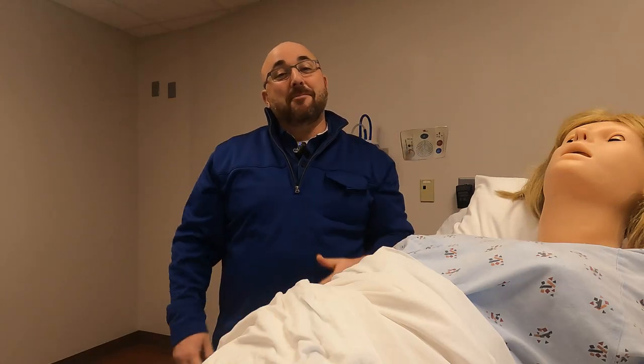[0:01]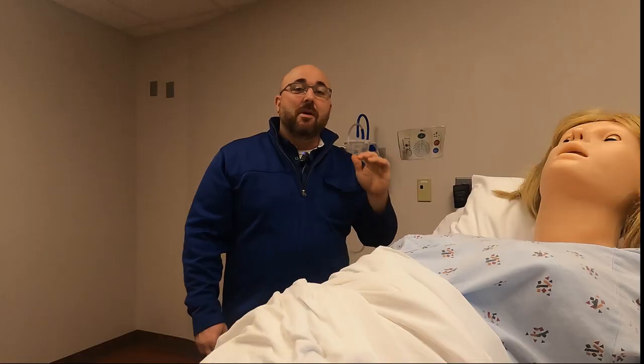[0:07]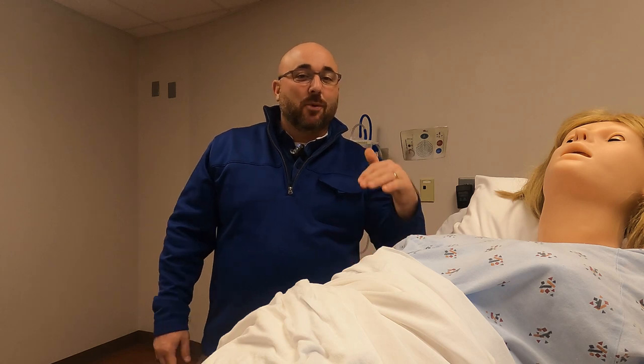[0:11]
Today's video is going to be about one of these things. You may have seen them on the wall before and not know how they're used, but today we're going to go over it RT Clinic style. Are you ready?
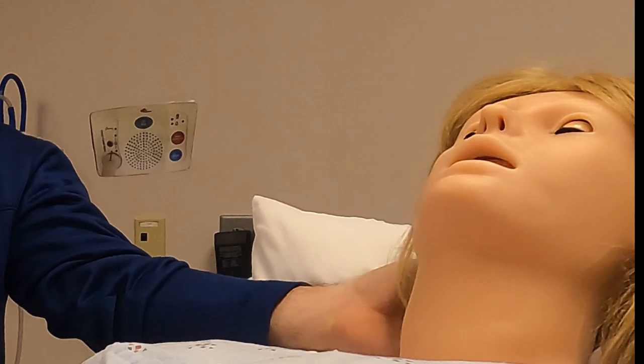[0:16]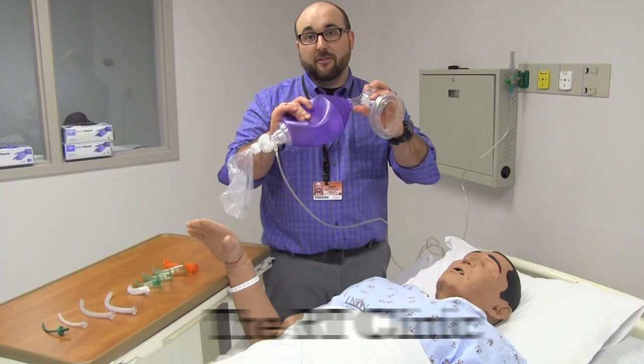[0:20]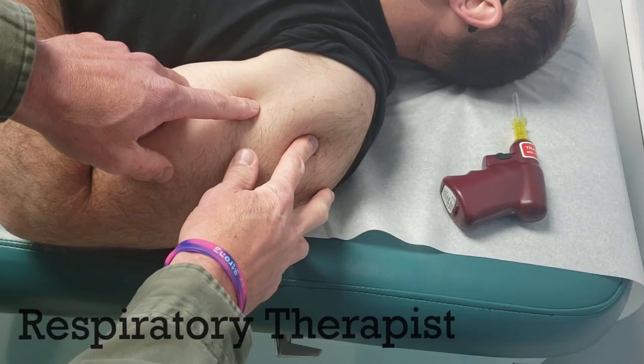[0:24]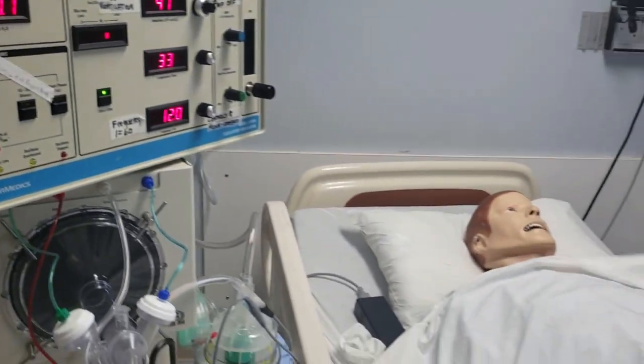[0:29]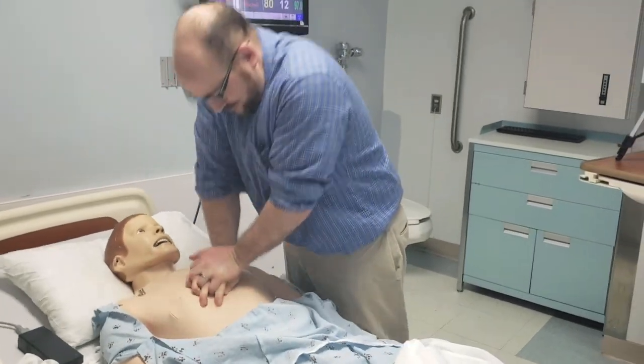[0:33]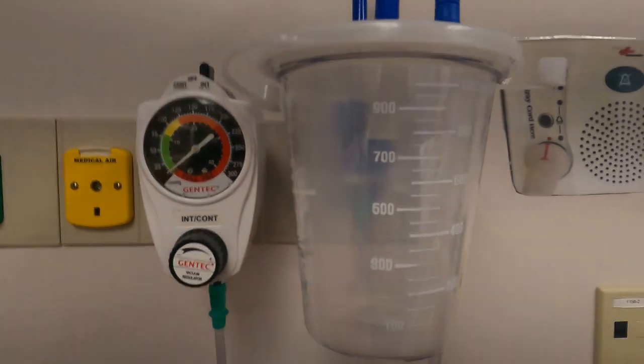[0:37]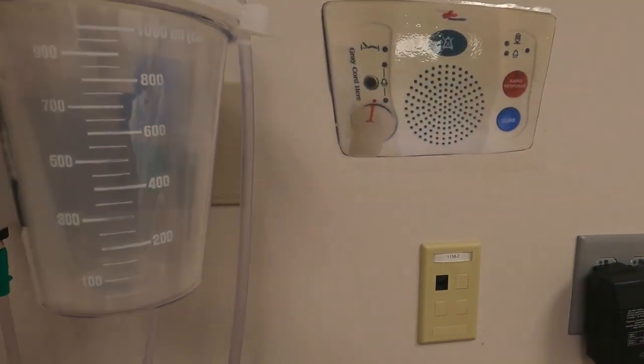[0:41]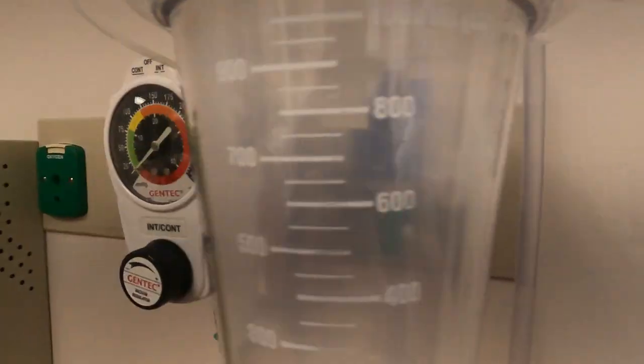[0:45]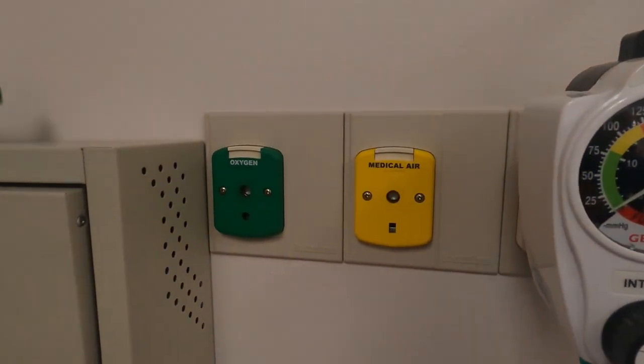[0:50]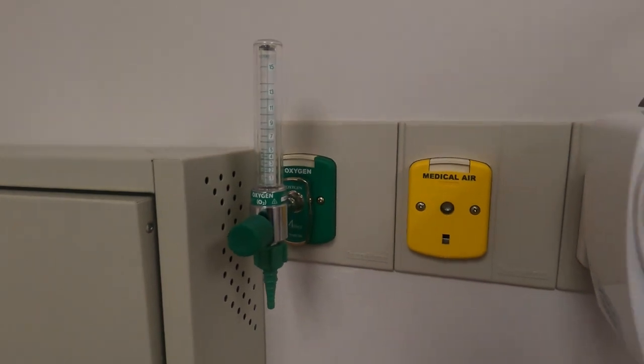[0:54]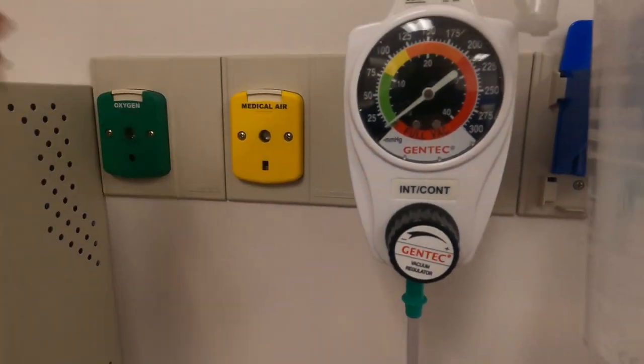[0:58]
So this is what we're looking at today. We have a suction regulator right here. We have a suction canister and we have some hoses going in and out, and you can see all these different things here. Now this can be quite confusing because right here, that's the oxygen outlet. As you see, that goes in there. We talk about that in another video. There's air.
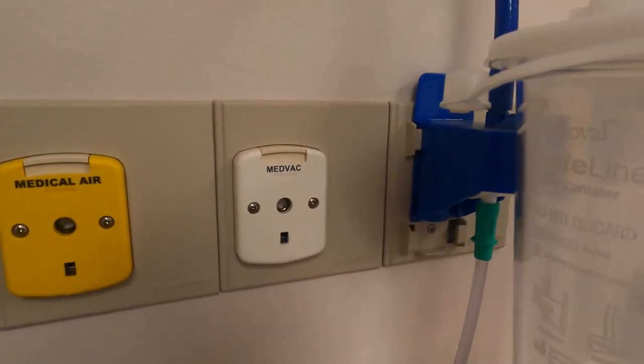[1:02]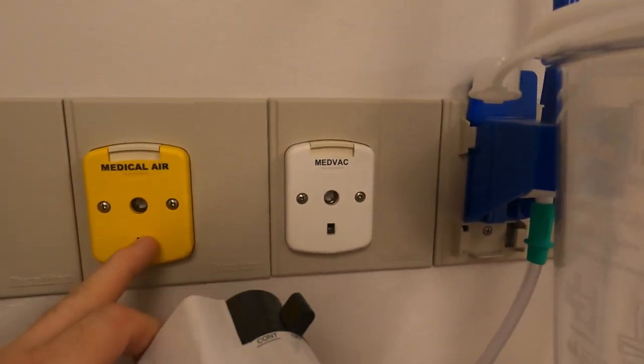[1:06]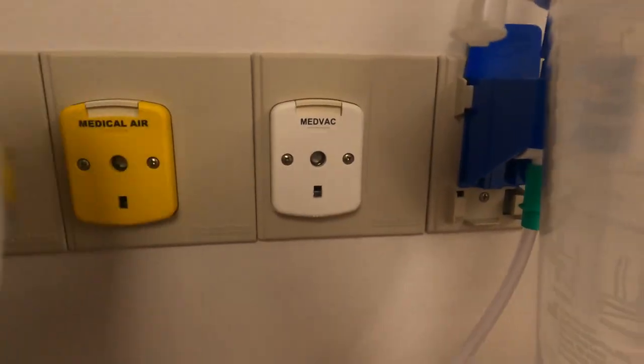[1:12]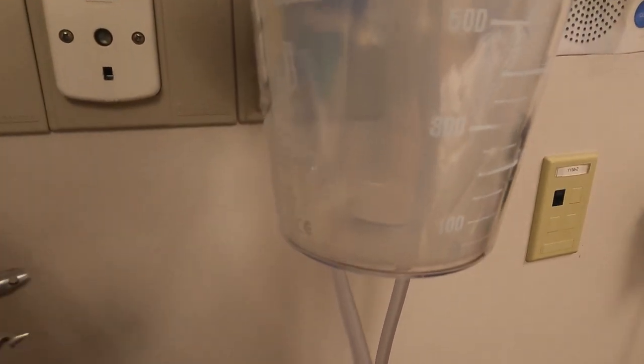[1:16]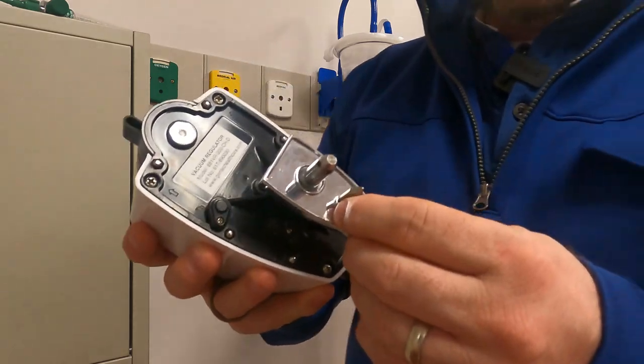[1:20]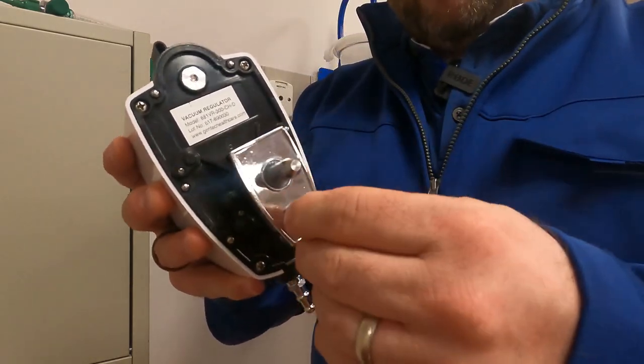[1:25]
And then behind this one, we have medvac or vacuum. So it looks like it goes in real similar to these, but these devices won't go into the wrong hole, which is really nice. So medvac, that's where this is going to go. Let's look at the back of this. So this is the regulator attachment. You're going to see this area right here. This is where the vacuum is going to pull from.
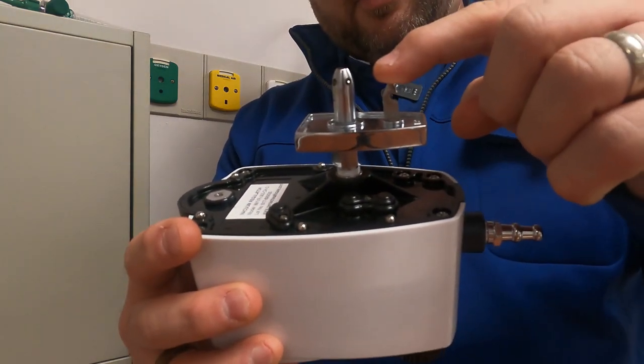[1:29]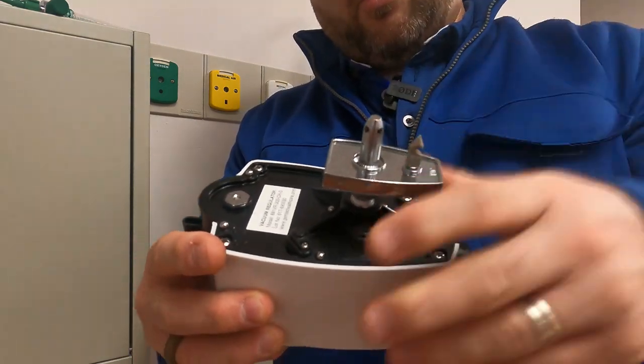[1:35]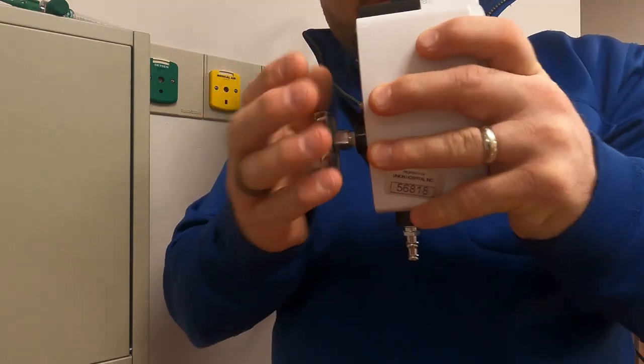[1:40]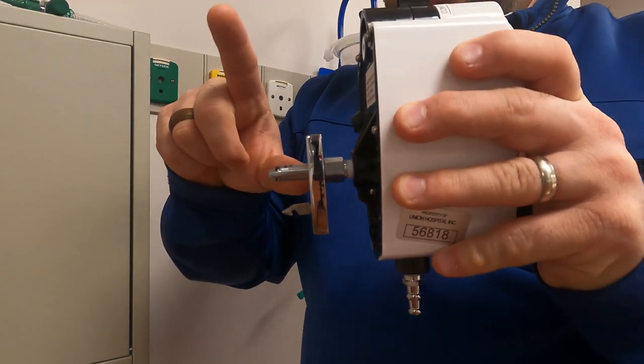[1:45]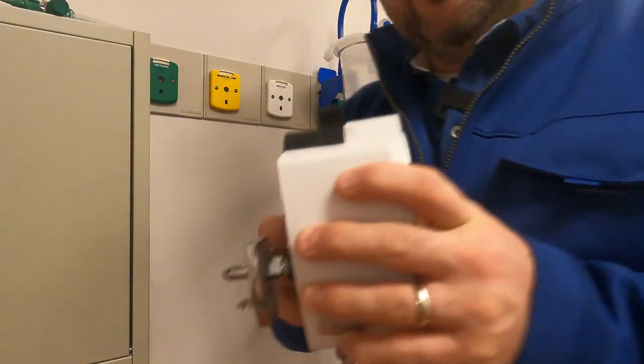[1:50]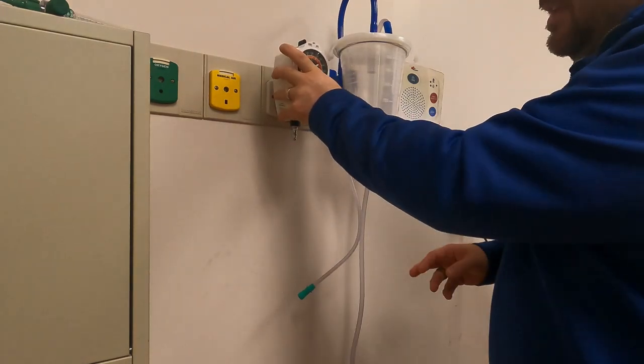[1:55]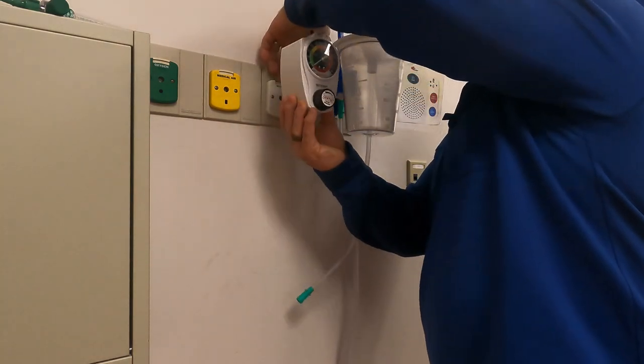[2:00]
And then this piece right here, and you can see in this case, it's a little bit loose. That's a common problem that we find a lot, but that's actually what's gonna latch it into the wall so that it won't come out. So this is gonna go in similar to a flow meter, and it's gonna lock in place. And then there will be a switch above it, a button that you'll push, and it will unlatch off of this and allow it to come out. So it's not gonna push it out with the power of a flow meter, but it's in, as you can see, a little bit loose. And then this button on the top and the back allows you to remove it from the wall.
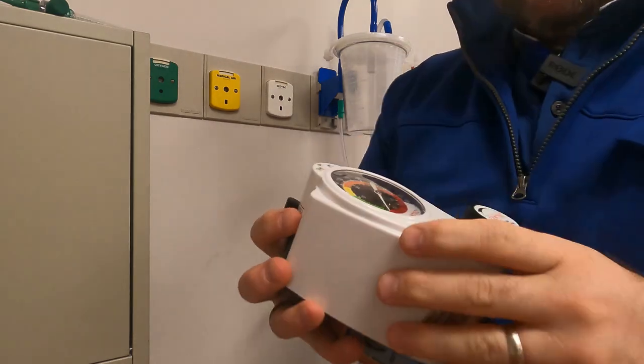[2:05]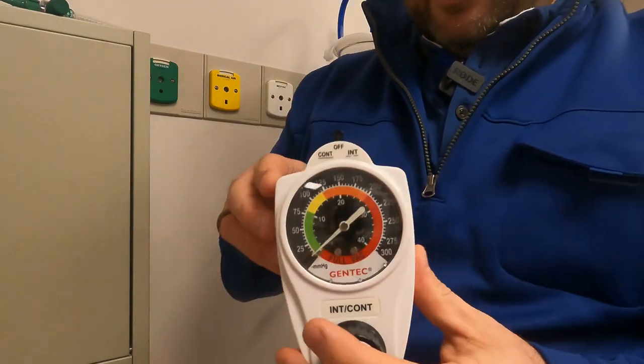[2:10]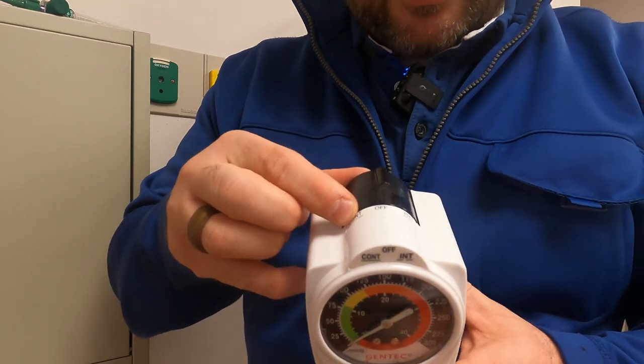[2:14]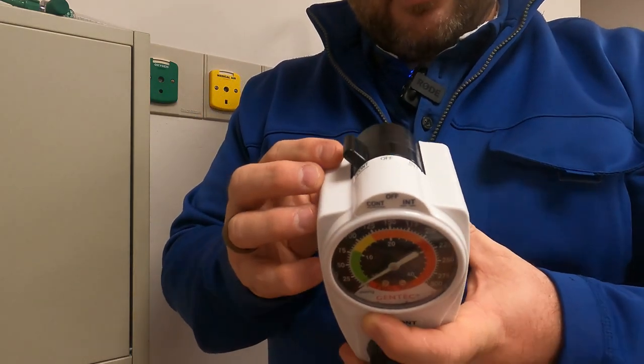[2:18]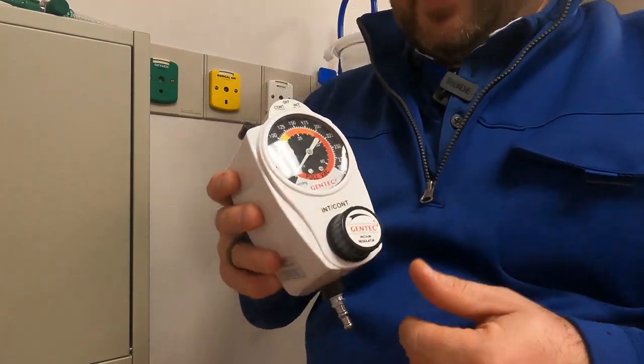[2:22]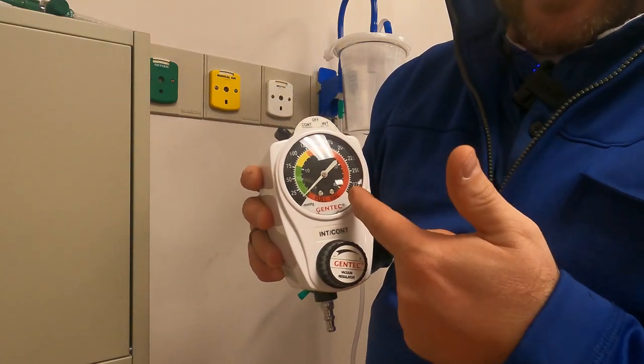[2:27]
And so this is a standard, sometimes people will call it a GOMCO. It can be changed in many different ways. We see we have continuous, off, and intermittent on the top. Usually in most cases, if you're going to need this in a pinch, you're going to want it just on continuous, and that's how we're going to test it. And then this is going to show you the pressure. So generically it shows you green, yellow, and red, but some things you need to know.
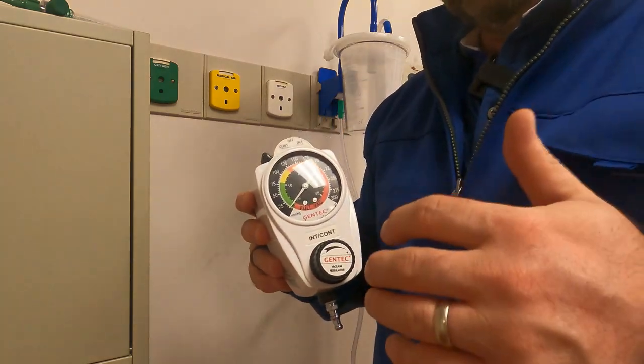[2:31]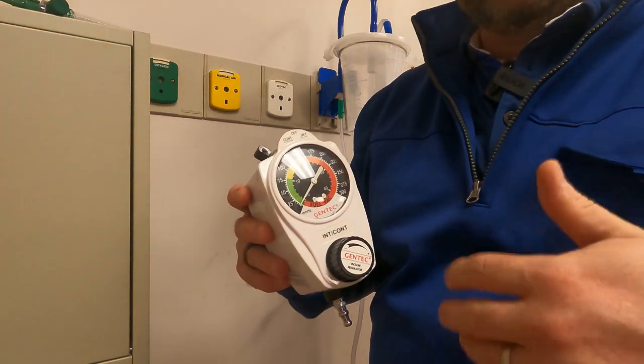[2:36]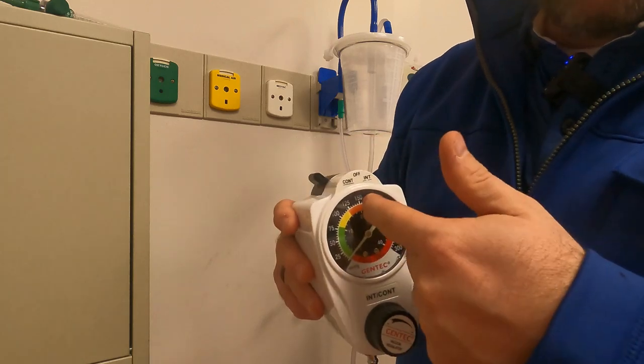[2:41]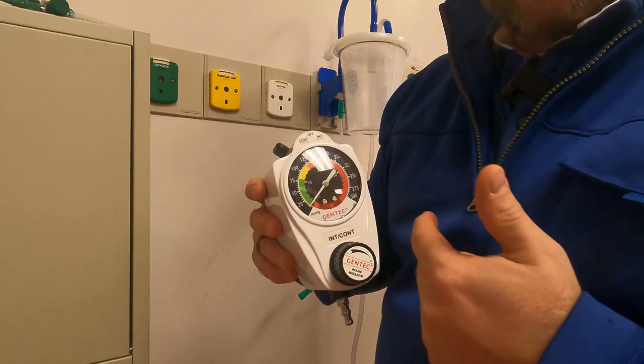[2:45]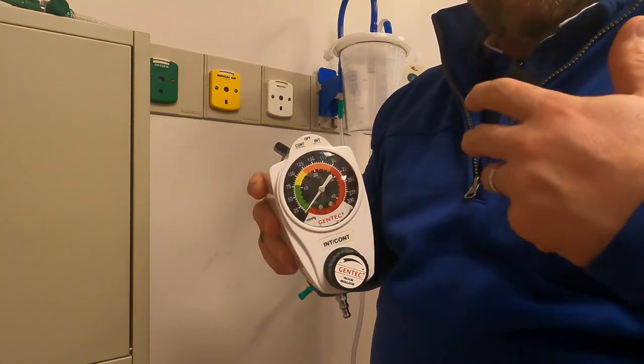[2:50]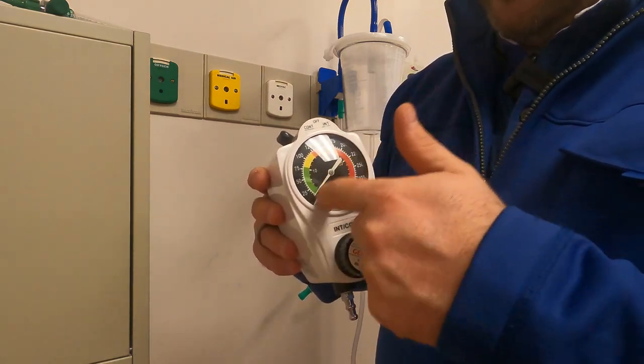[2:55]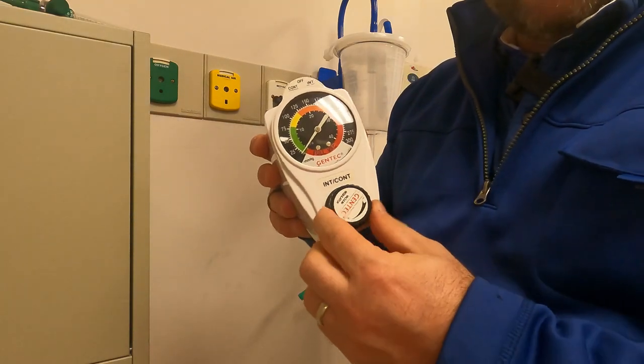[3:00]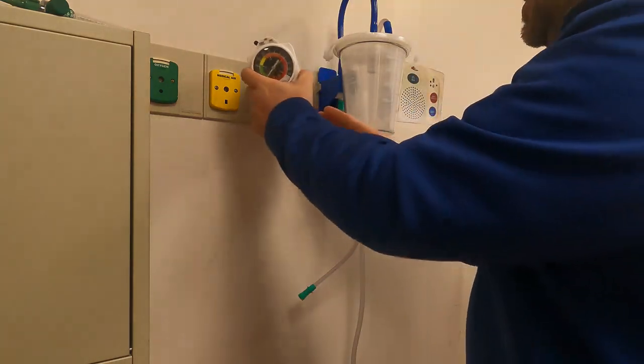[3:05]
If we're in a situation where we have to suction for like an intubation or somebody's vomiting or something like that, we really want to turn this up pretty high. Everything you read says you want to keep it below 150. Actually, 150 to 200 is kind of the max, but there are definitely times we'll turn this on full vac for a patient that might be vomiting or have a lot of mucus, or we need to suction out the airway so that we can intubate the patient. So you'll see it turned up to full vac in those cases. Now you see, if I change this, it does absolutely nothing right now because it's not plugged into the wall. So I'll plug it into the wall and then show you how to test the regulator.
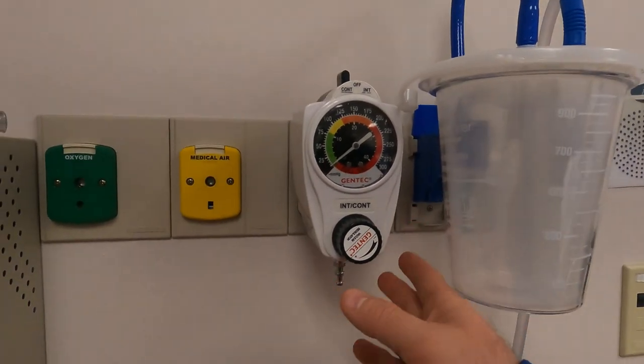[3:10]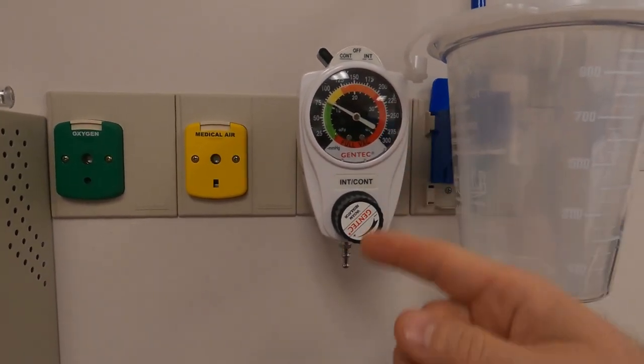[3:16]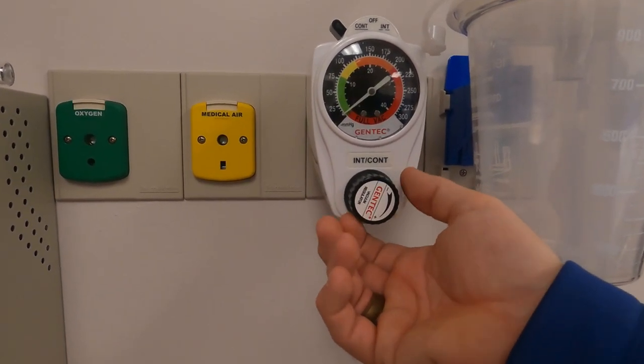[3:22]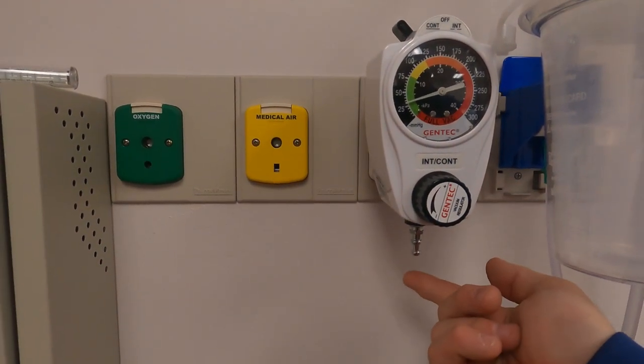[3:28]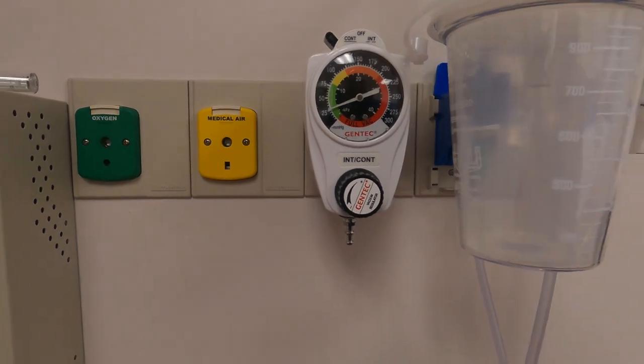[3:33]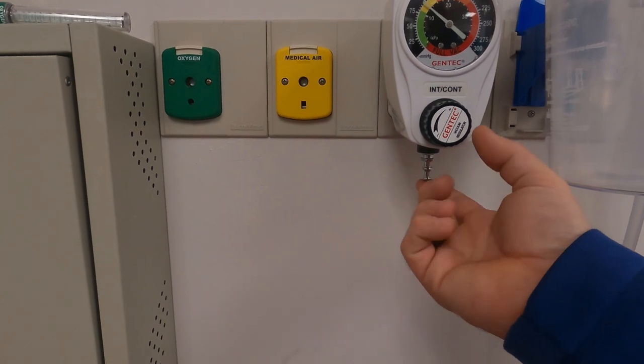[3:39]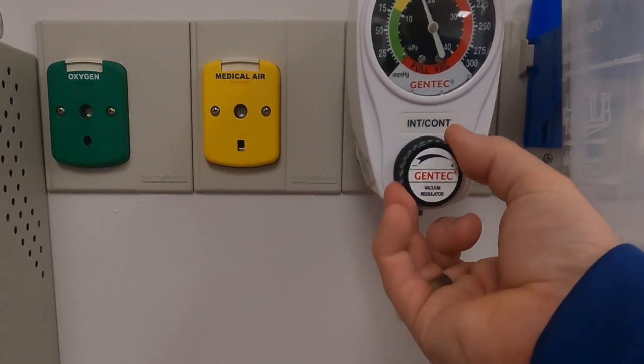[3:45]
So if we're gonna look at just actually testing the regulator, so it's in the wall, I can put it on continuous and you can see it pulling vacuum, but that's not the actual, I'll turn it off here just so it's not super loud, but that's not the actual vacuum it's pulling. You have to occlude this port and that will tell you where it is. So if you're looking, and let's say you're taking care of neonates and you're gonna be going 80 to 100 on this vacuum, you'll wanna occlude this and then adjust. However, that's the max vacuum. So it will never go higher than that pressure right there that we have set.
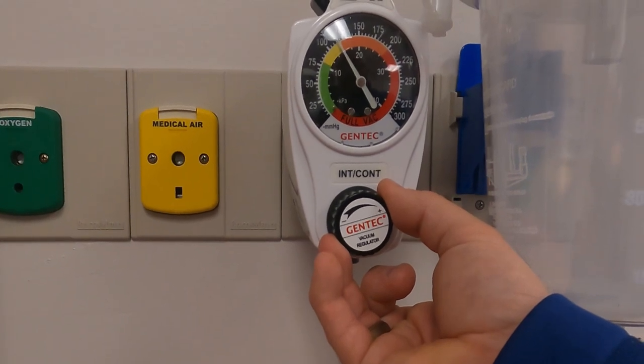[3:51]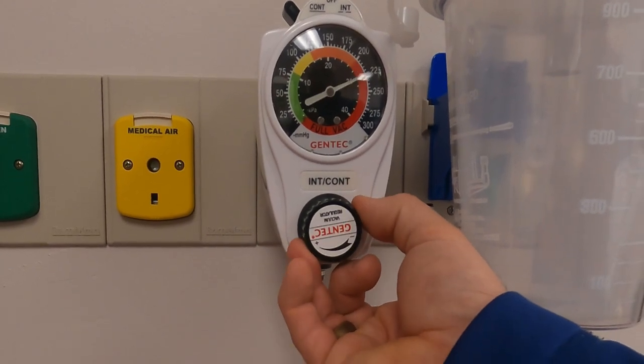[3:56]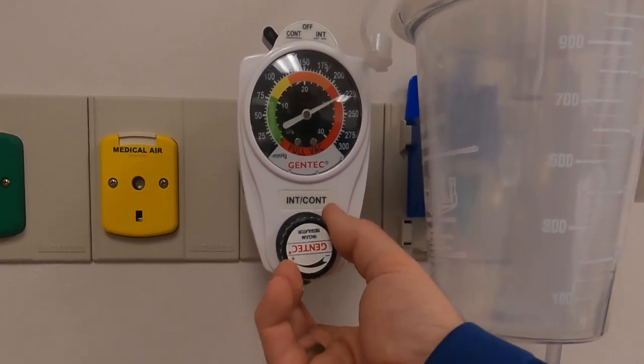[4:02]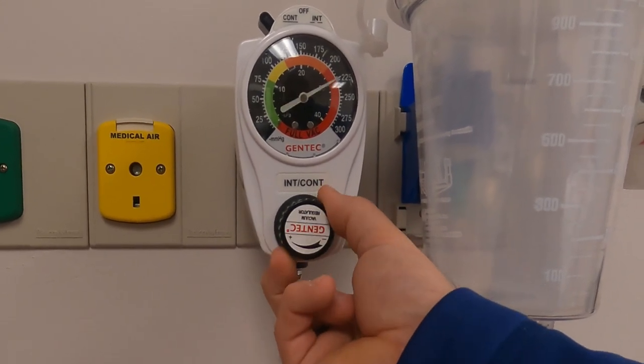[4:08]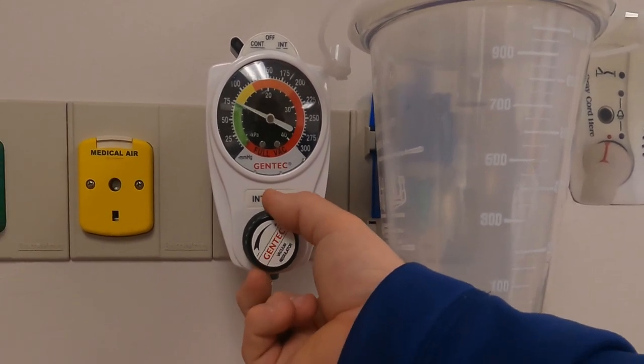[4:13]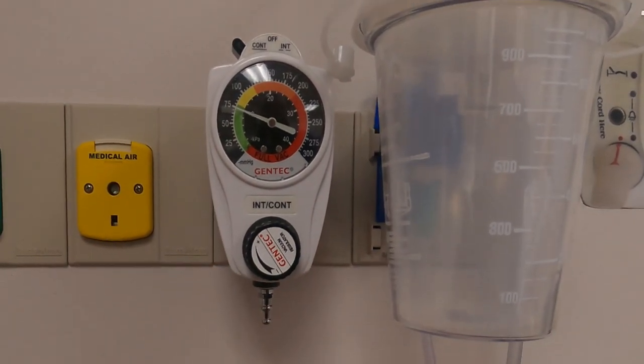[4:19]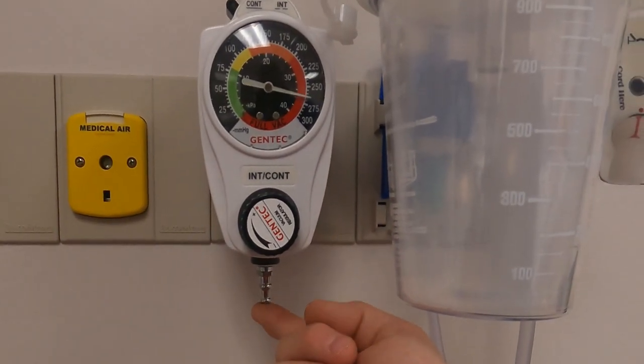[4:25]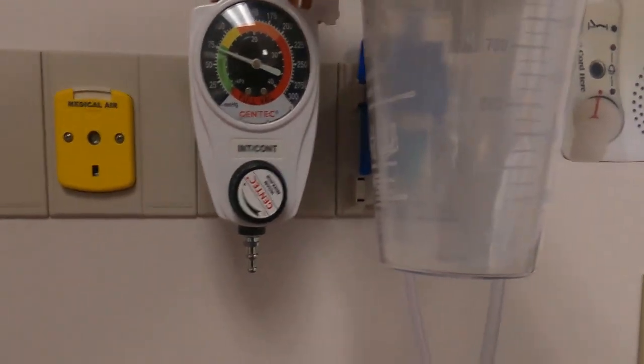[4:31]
So that's really important. So if you're gonna go low, you're gonna set it there. Most of the time, you're gonna want it around here if you're using this in a situation where you're gonna need vacuum quick for an emergency. So we're gonna probably go in the red somewhere, but just so you know, the continuous for an emergency is gonna be over here. And then if you're doing intermittent suctioning or suctioning from an ET tube for a neonate or PED, you're gonna be over here on this side. But as you can see, this tells you really nothing, because it looks like I'm on 75, but if I occlude this, I'm actually on 275-ish. So this is the way you tell your actual pressure you're giving the patient, not by an open circuit.
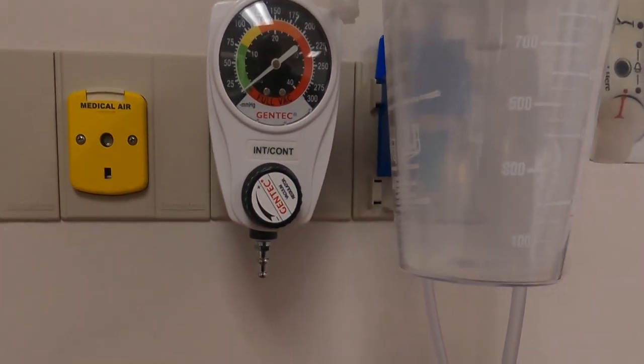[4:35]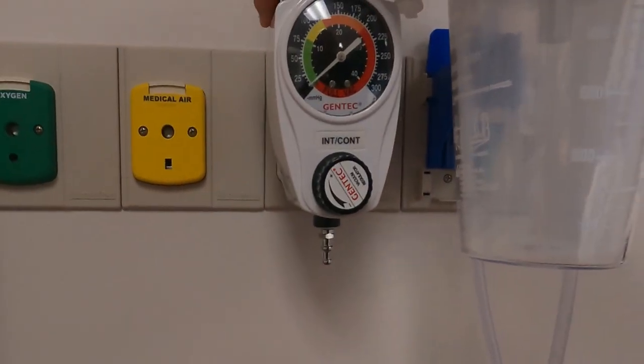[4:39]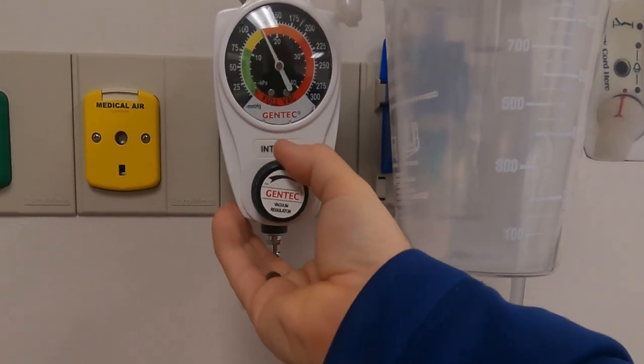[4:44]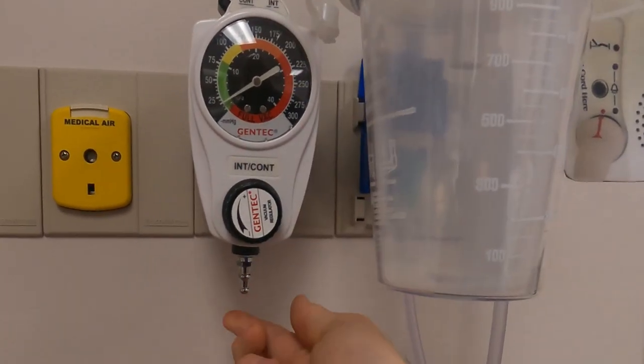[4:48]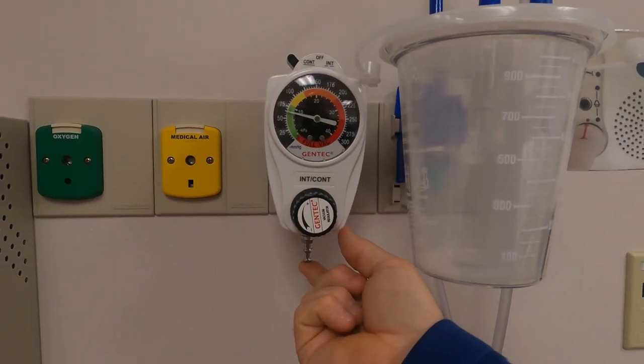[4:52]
Intermittent suction will suction intermittently, obviously, but this is usually hooked up to an NG tube. But to test intermittent suction, let's just give a situation, let's say they want 50 of suction. So then you would put it on intermittent, you would test it on full, or continuous, test it right there. Okay, we're about 60 or so.
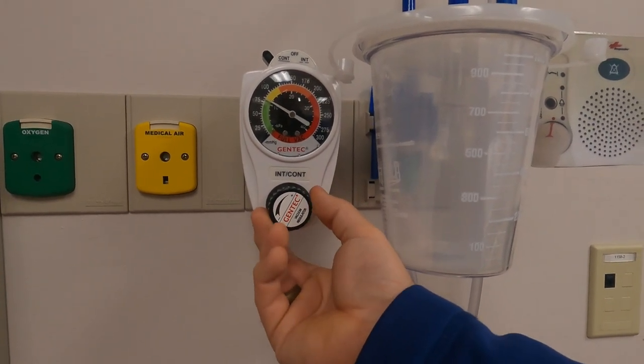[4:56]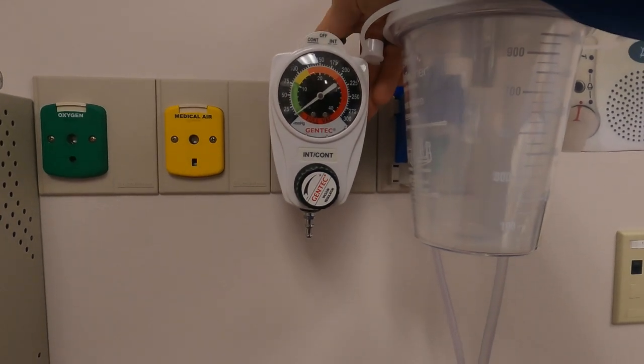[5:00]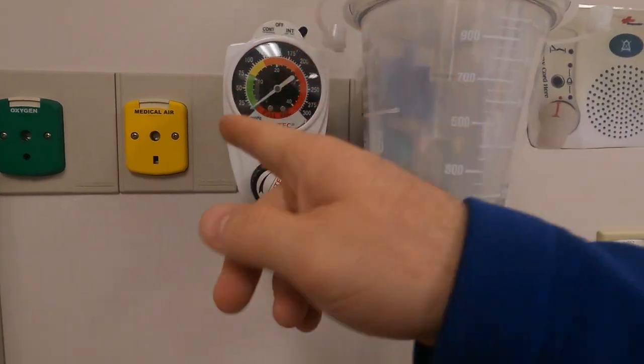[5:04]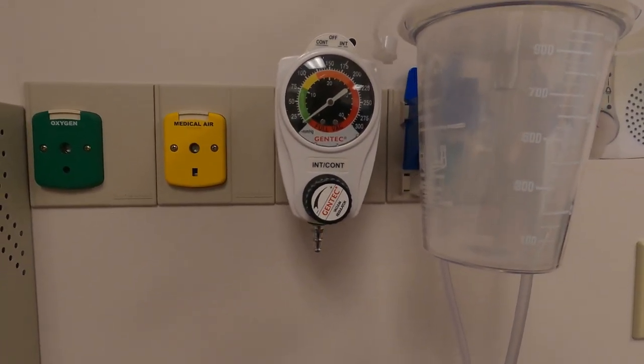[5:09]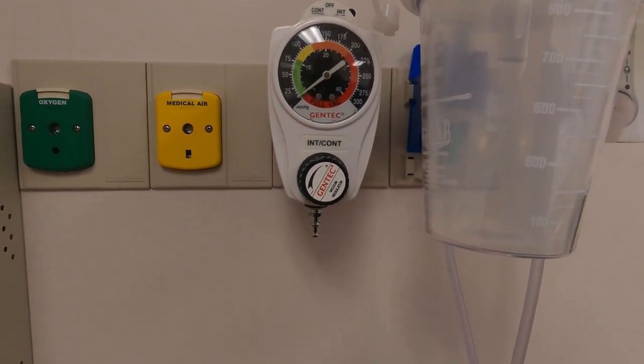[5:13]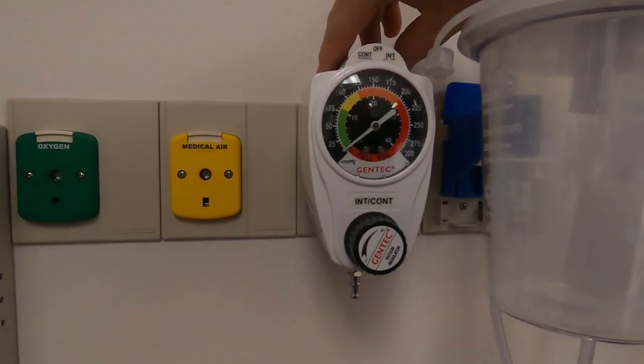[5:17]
Let's say we want to be at 80. So we go there, that's occluding it. And then hook it up to the NG tube, put it over to intermittent, and now it will not go above what we have set at 80. So that's your intermittent suctioning. That's how you set it. You can hear it right there. It kicks in intermittently. A lot of times those will be hooked to an NG tube. So that's how this works.
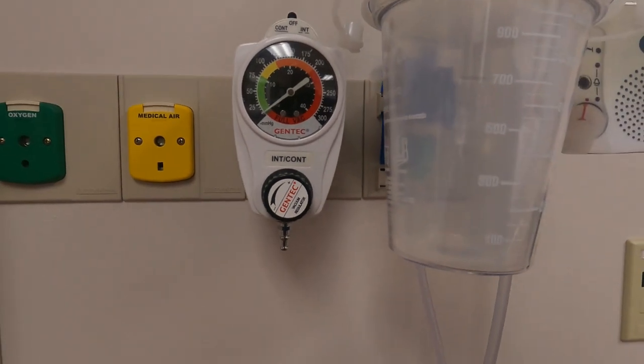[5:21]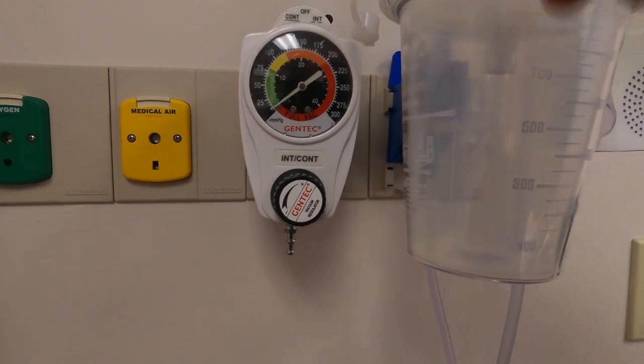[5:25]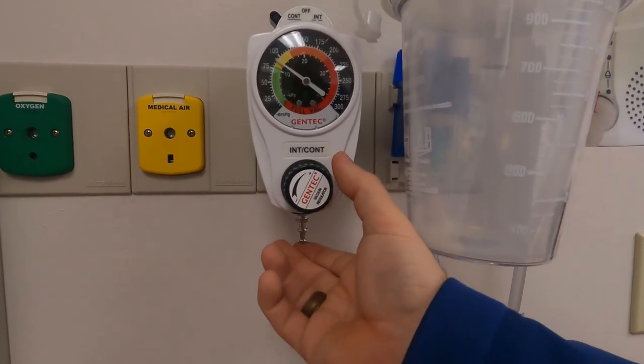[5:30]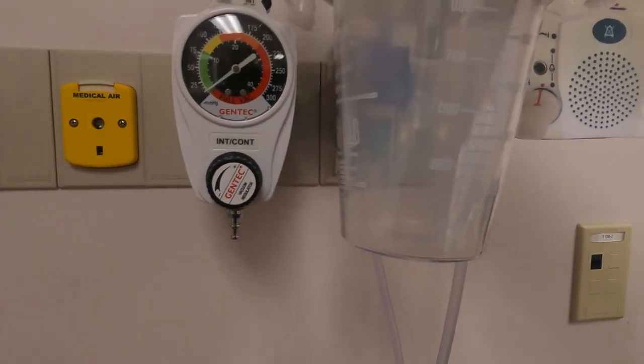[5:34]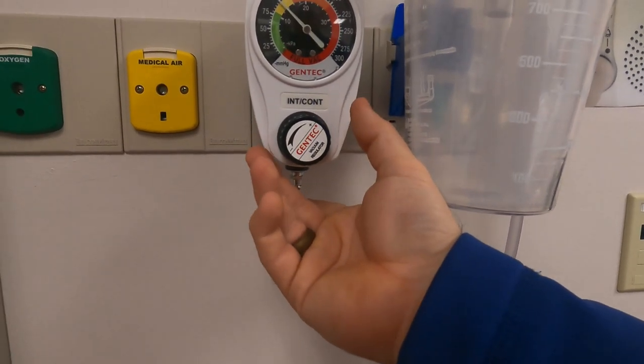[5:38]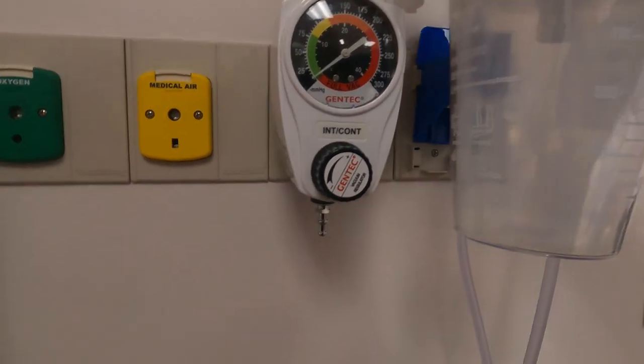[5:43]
Continuous, if you're in a pinch, you need to get some stuff out of the airway, suction whatever's coming out. Low intermittent, you're gonna set it by going to continuous, and then you're gonna go over, put it on intermittent, and it will never go above that. If you set it on intermittent and sit there and wonder, how long will it take? It might take a while. Oh, there you go. You can see that it occluded and popped up. So it could take a while though.
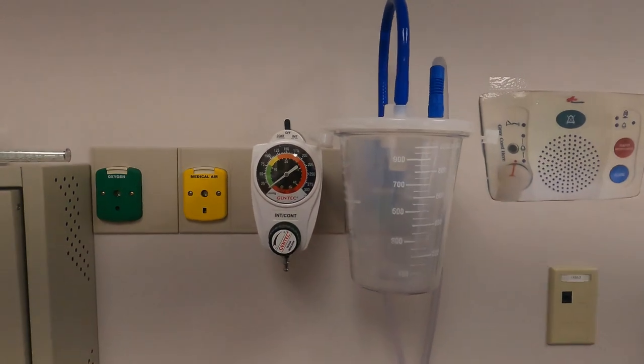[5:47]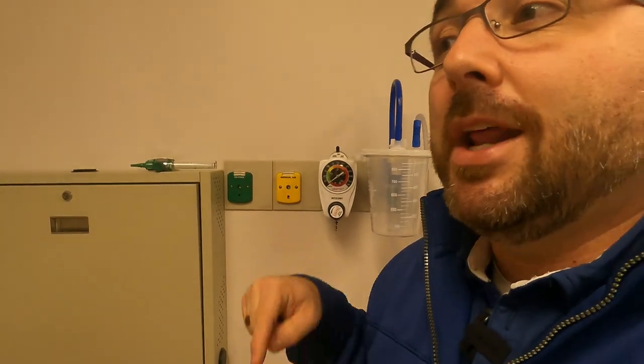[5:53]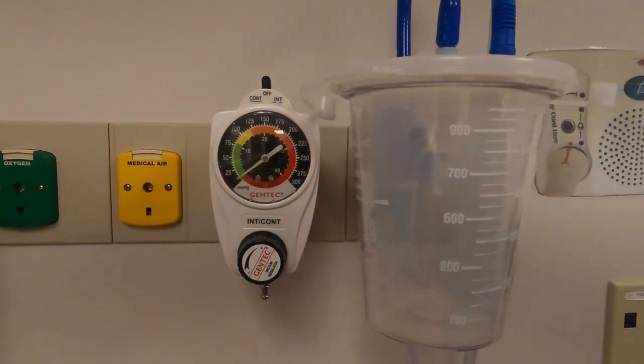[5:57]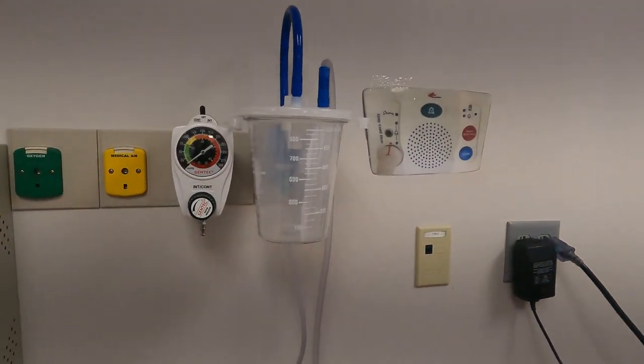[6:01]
Anyway, that's the GOMCO. This kind of looks like a PR2. If you know what a PR2 is, that's old school respiratory stuff. Put it in the comments below that you know what a PR2 is. This kind of looks like a very small version of a PR2. Let's go over to the canister next.
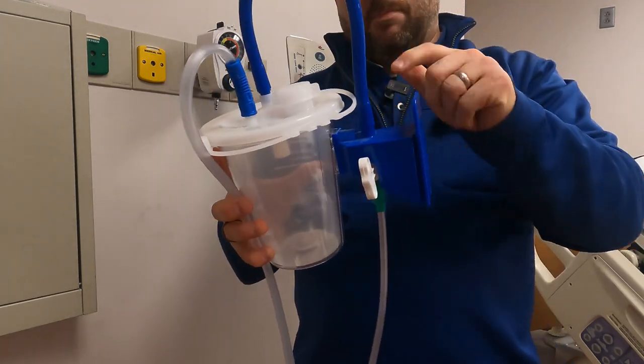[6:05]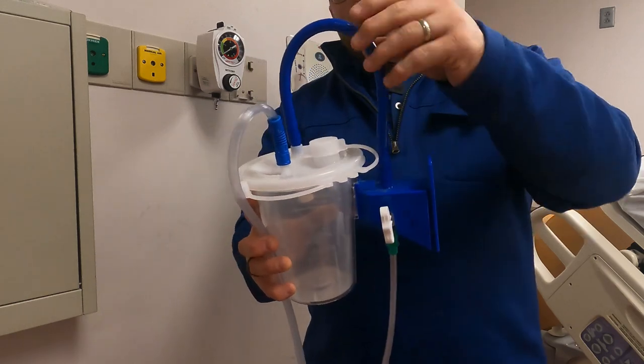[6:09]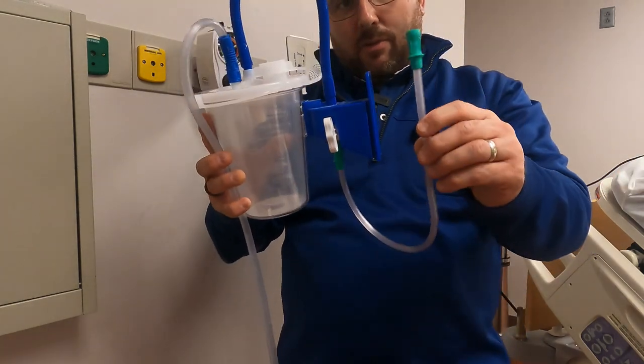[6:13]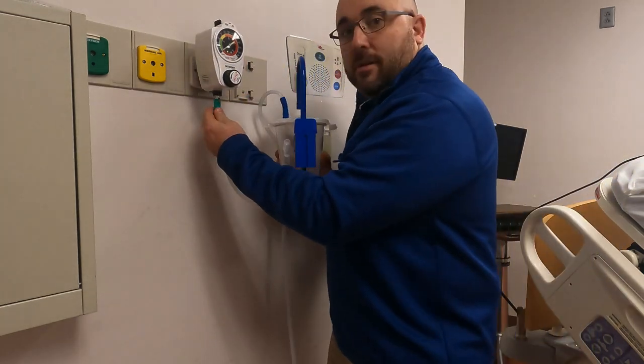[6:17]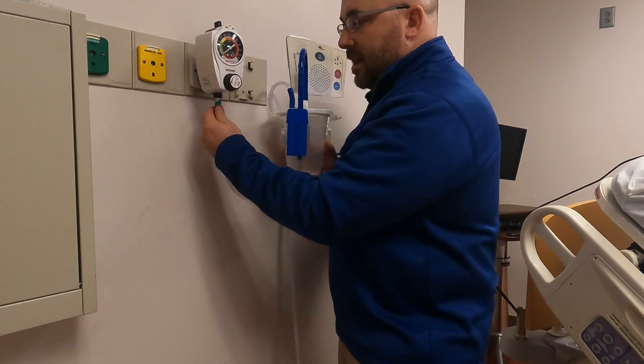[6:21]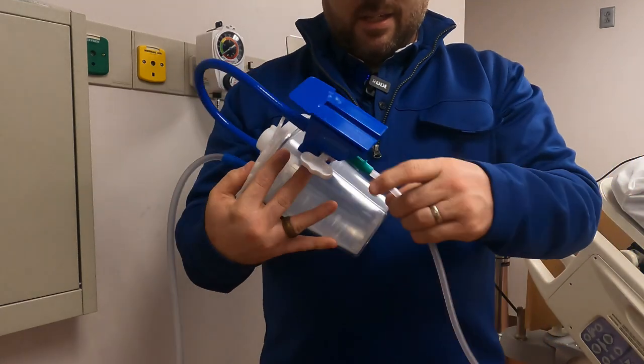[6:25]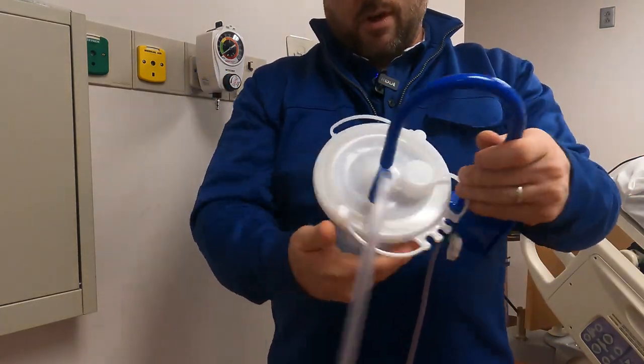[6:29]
So I removed the canister and it came off the wall. This is a bracket and a blue hose here. Now these are reused, including this one hanging off the bottom. This is a reusable tube. This will hook up to our regulator right there, our suction regulator, our GOMCO. I'm gonna call it a suction regulator. So that's gonna pull suction, and you can test this. It's gonna pull suction through this tube into this large one, and then this blue tube is gonna go into the disposable canister.
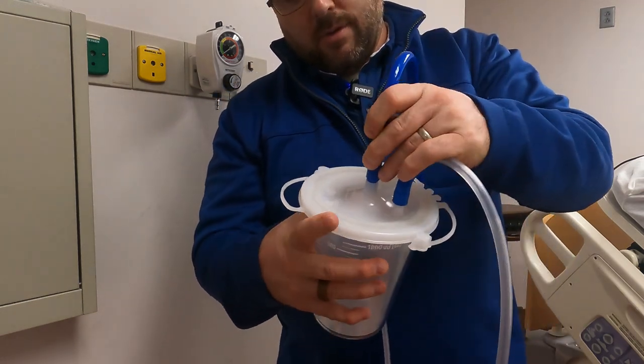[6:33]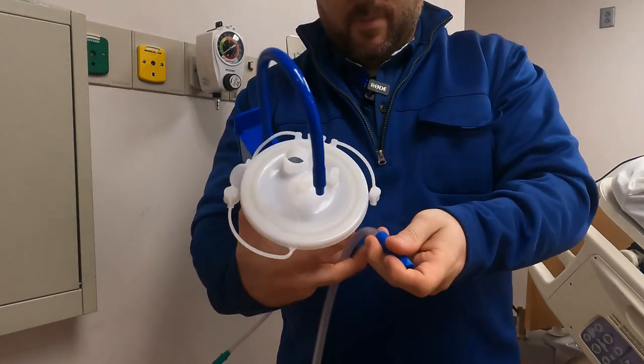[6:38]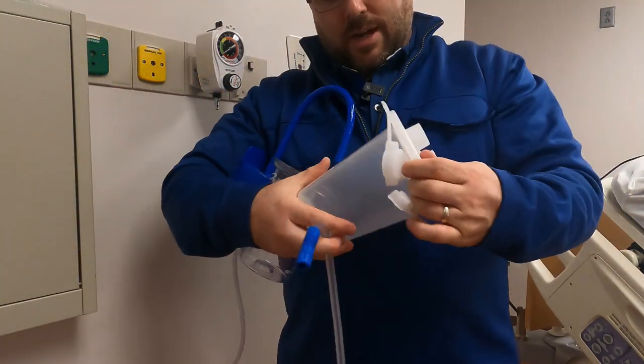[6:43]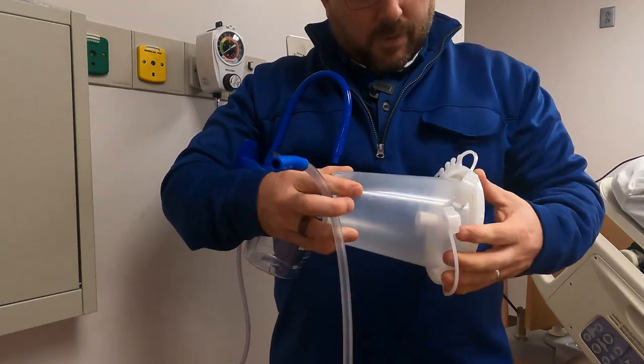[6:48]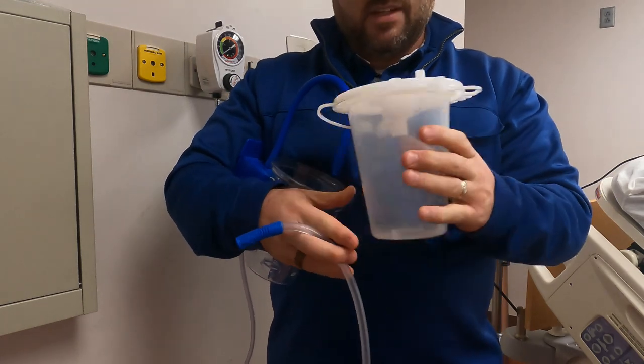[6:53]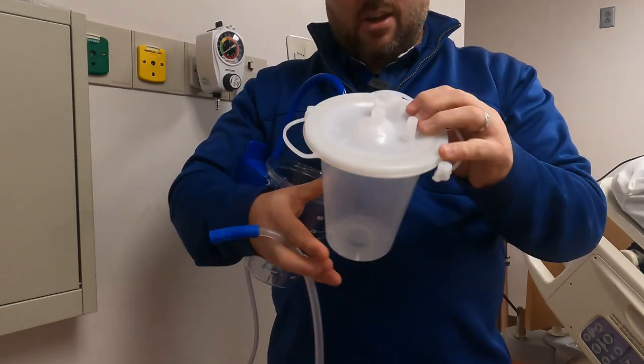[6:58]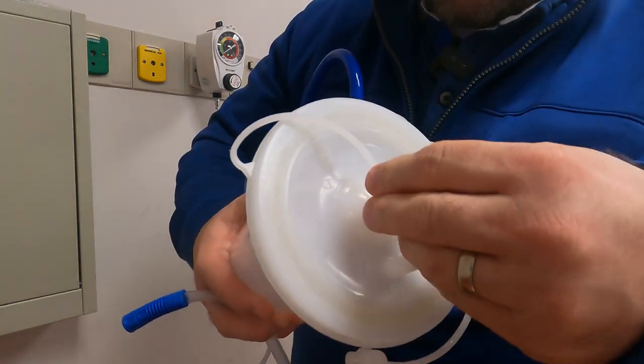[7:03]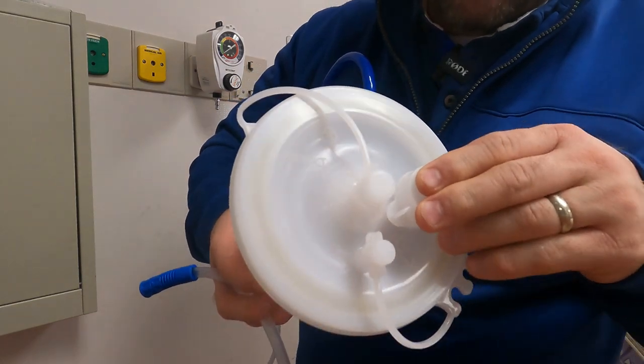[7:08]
So on a canister, a lot of times they'll come from materials, and they'll look something like this. Actually, they might even have the top off of them. Nope, these are just sealed tops. So if the top's on them or off of them, this is the way they may come. So this is what they make now. It's kind of like a liner, but it's all sealed up. We got some holes on the top, and so they kind of make it nice. They've got these different things that fit over these, but you really have to know what you're putting where.
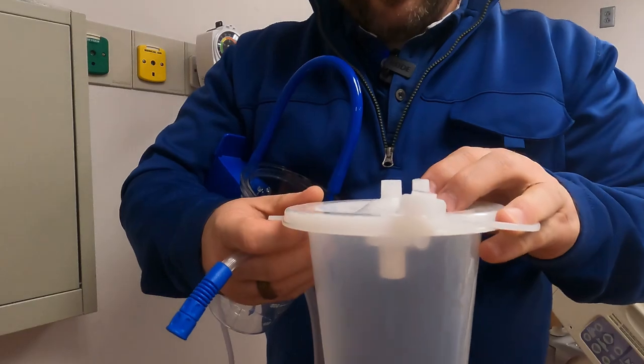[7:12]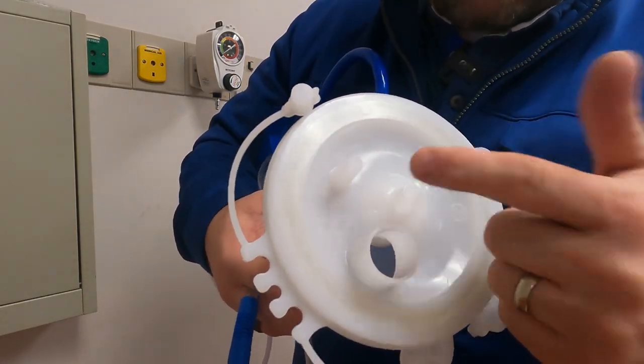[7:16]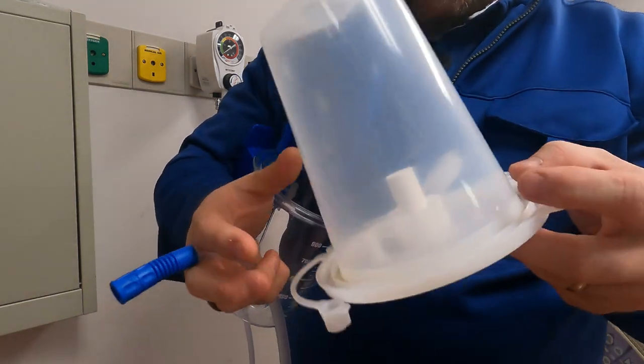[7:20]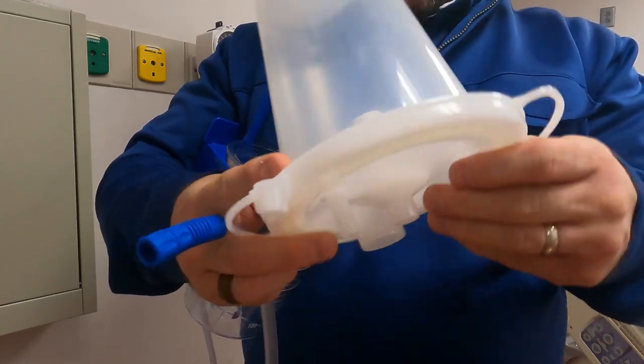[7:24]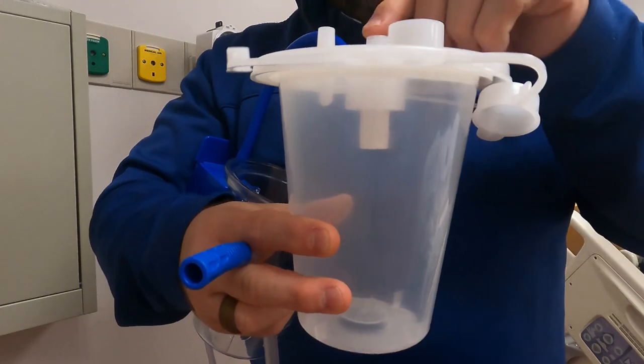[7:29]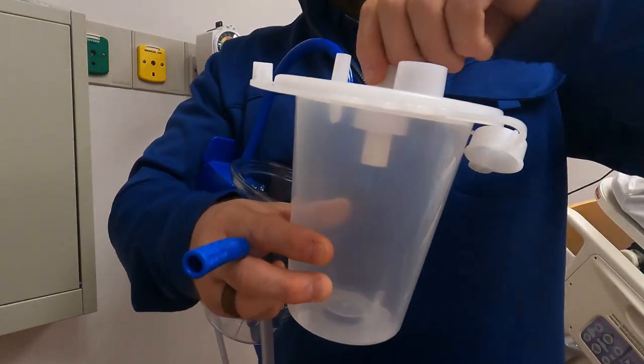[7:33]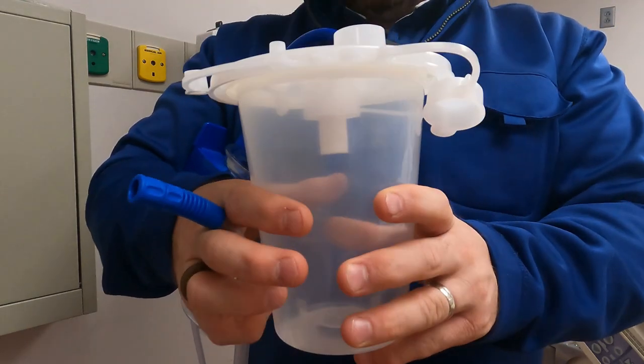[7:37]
So if you're ever in question, the one in the center says vacuum on it. You can see it, it's kind of difficult, but you could be like, well, where does this thing go? The best way to look is go on the inside. If you see that right there, you see that filter, and this is it turned upside down, there we go. You see the filter? That's always where the vacuum is. So if you go to a different facility and they're looking at the suction canister, look for that filter, that's where the vacuum hooks up.
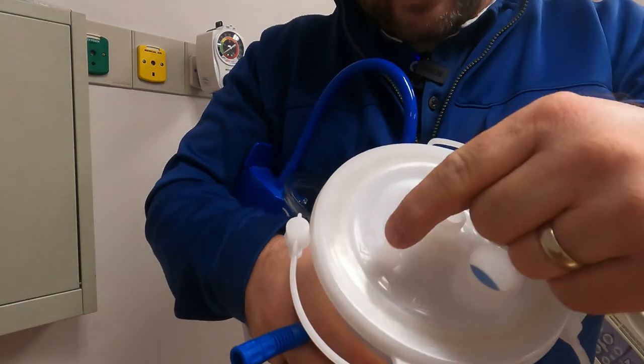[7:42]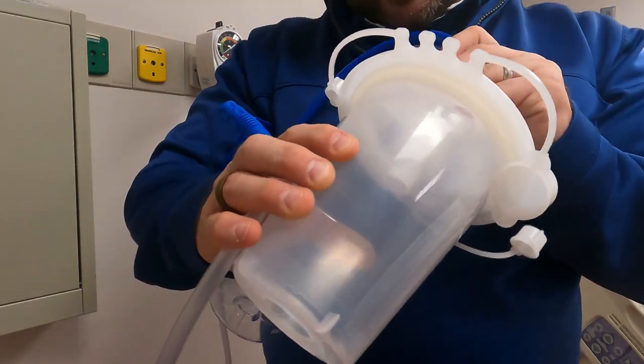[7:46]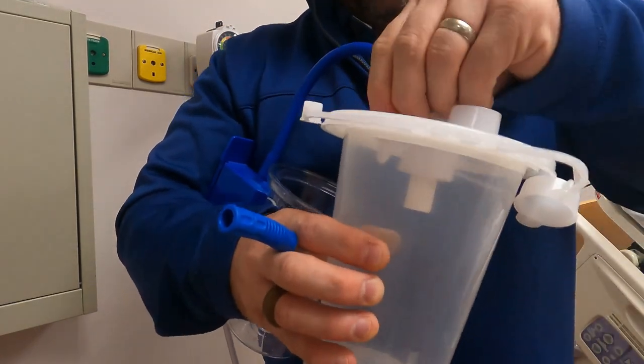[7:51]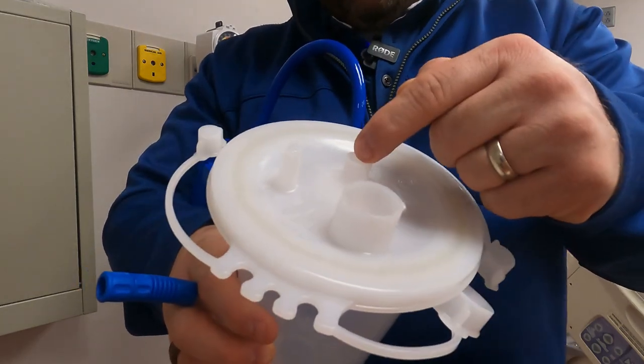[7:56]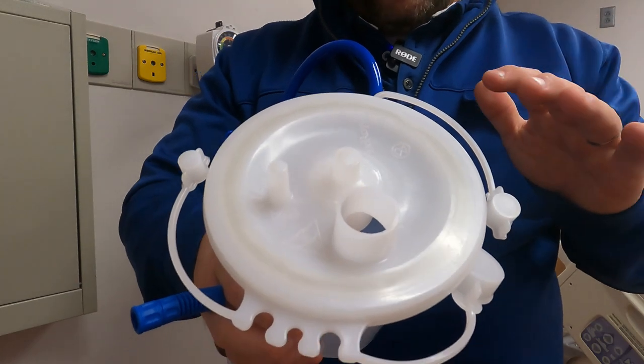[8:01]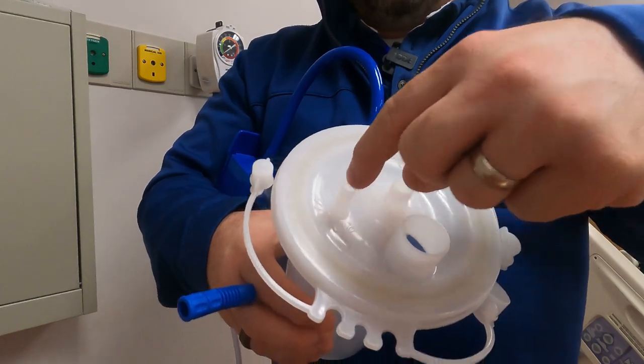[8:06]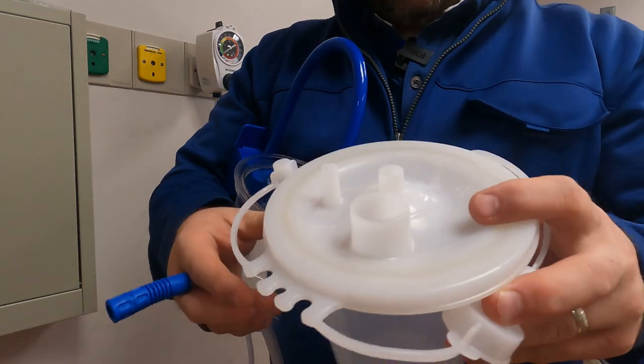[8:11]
If you do it the wrong way, and it can easily be done, and you hook vacuum up to the patient side. So let's say, they make it so it actually doesn't fit anymore, but let's say the blue tube comes off and you're using another tube and you hook it up to the wrong side. It will suction, but whatever you're pulling, vomit or mucus or whatever, it'll pull it back to this filter and it'll stop. It'll suction for like 3 seconds, and now it stopped. It's because you have these two hooked wrong. It's a great way to troubleshoot it. But they make it now so it's kind of dummy proof so that you don't make any issues by hooking it up to the wrong tube.
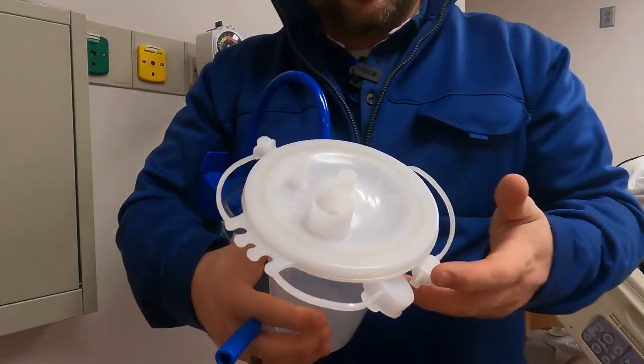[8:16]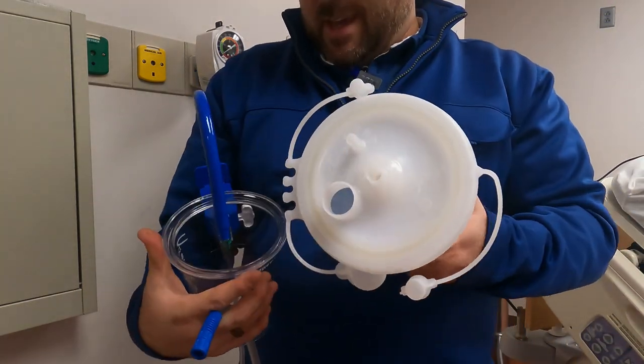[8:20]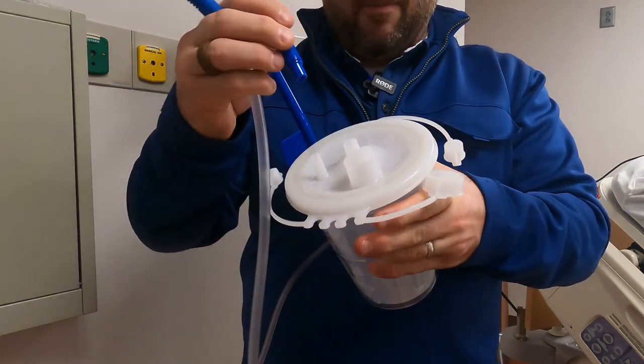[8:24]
Now, one thing that's definitely going to cause a problem is they come from the factory like this. If I just go and put it inside this casing and I don't know much about it and I stick this in the center, that's correct.
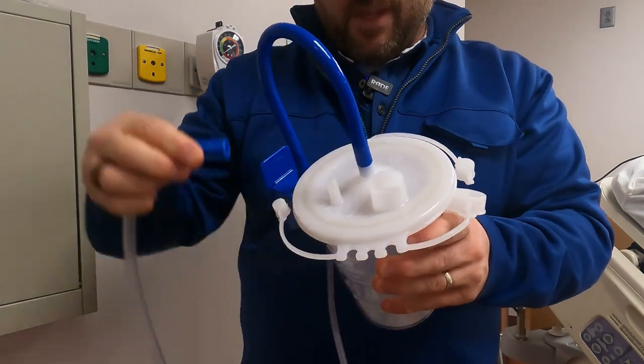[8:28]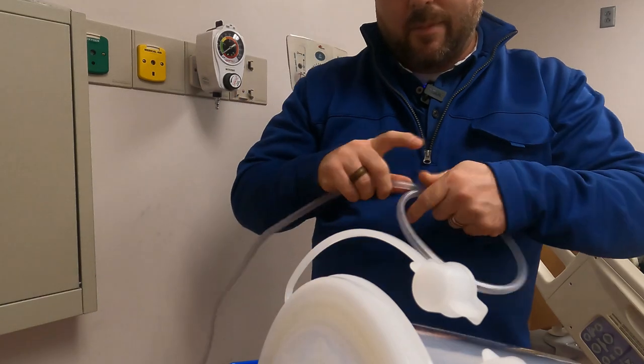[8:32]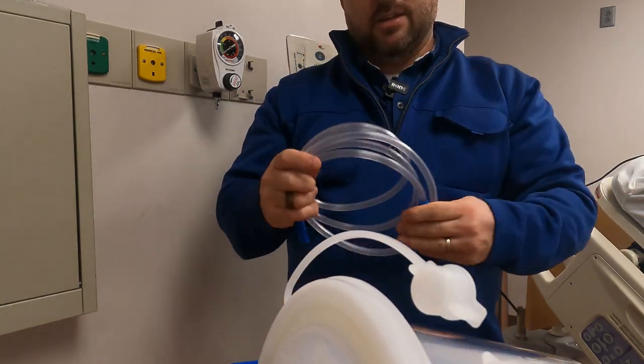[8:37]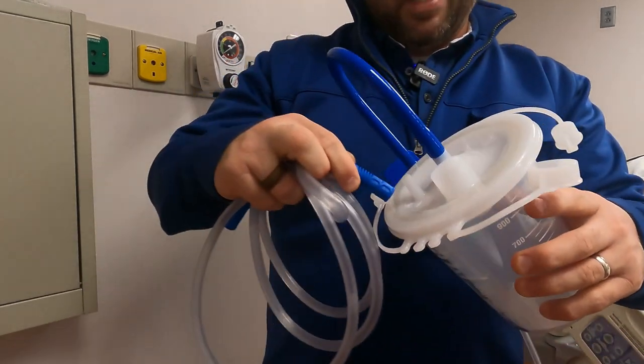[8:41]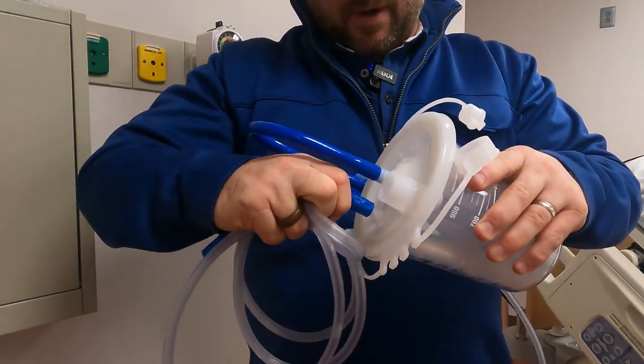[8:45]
That's all where it should be. And then I take my longer hose, and you're going to see that it's going to come in a package. It's going to be kind of rolled in a little bit of a circle like this, and then I usually open up the side of the package and leave the package on it. Just makes it look cleaner. So that, and this goes on here where it says patient side. So we put it on the patient side, and then I hook this up.
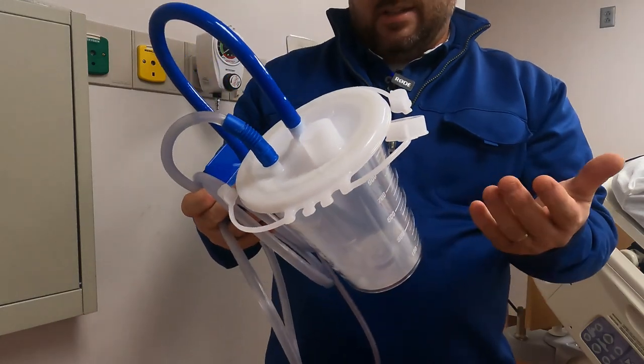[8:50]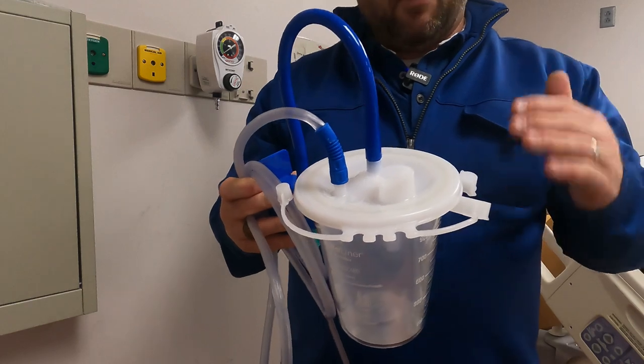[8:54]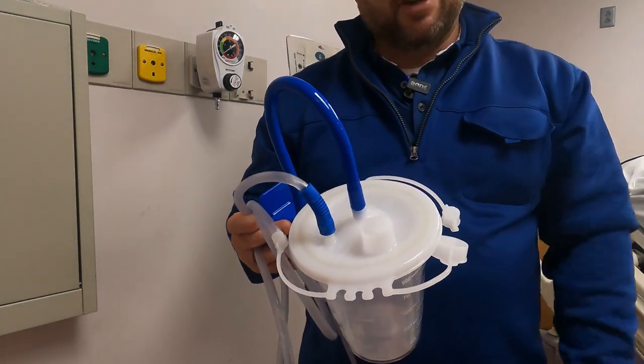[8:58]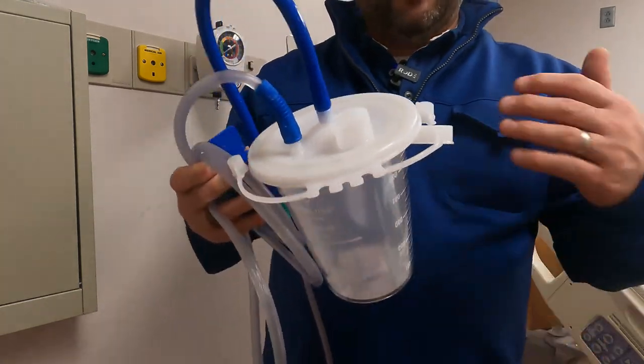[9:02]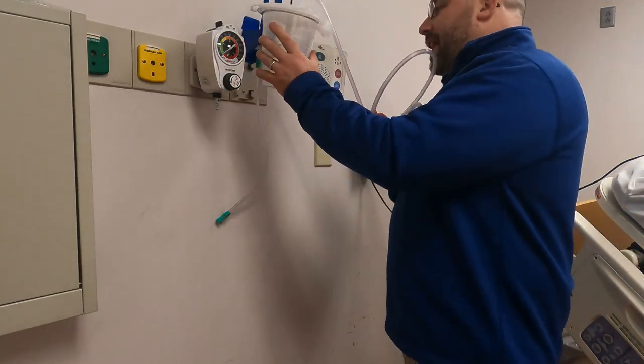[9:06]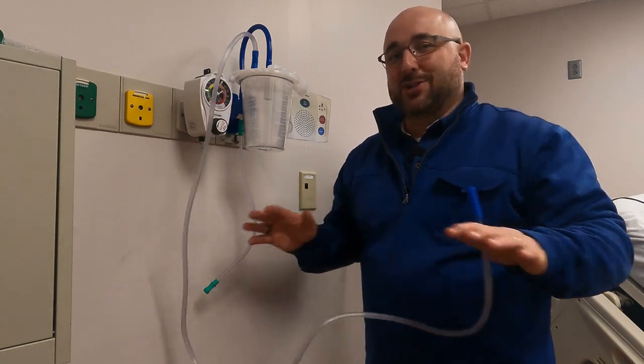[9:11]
Now, I have everything the way it should be, but I'm missing one key point, and you'll know it right off the bat. All the respiratory therapists know it because they've run into this. ICU nurses, everybody's run into this before. You go in, you start fumbling with this crazy suction, because you never need suction slowly. You're always in a rush when you need suction, and that's for sure.
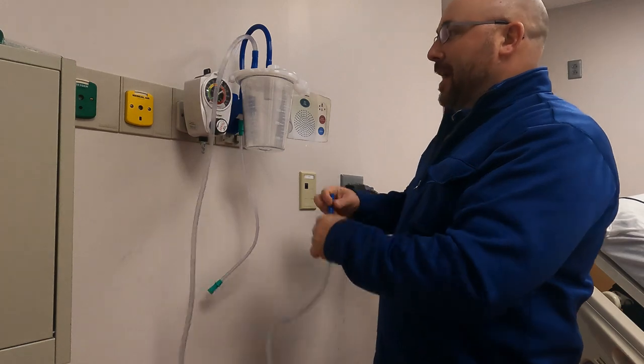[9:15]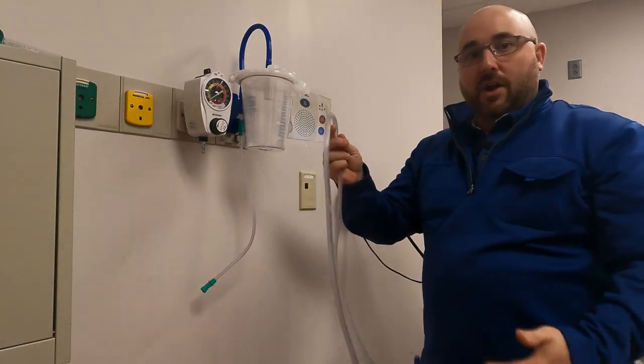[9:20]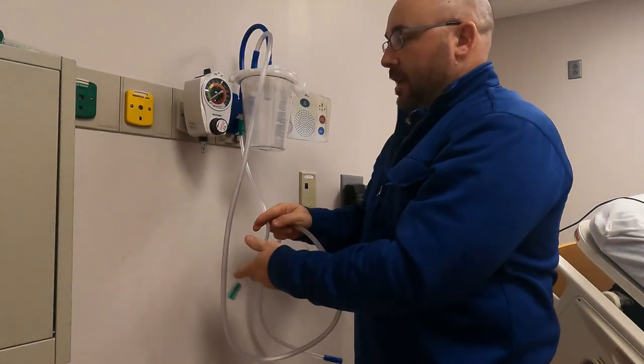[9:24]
So what I'm looking at, this is on the wall, and this might be hanging something like this, or maybe this is hanging over the top of it. So all the hoses are here. I could go like this. This goes on the patient side. Patient, this goes over here. Should have been hooked up already, but it's not.
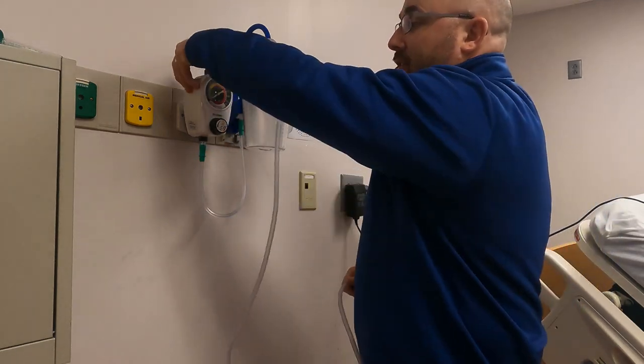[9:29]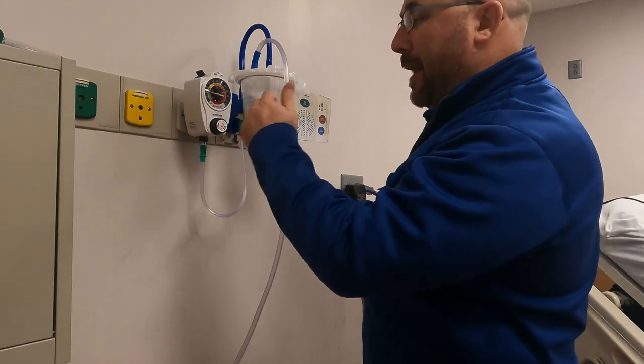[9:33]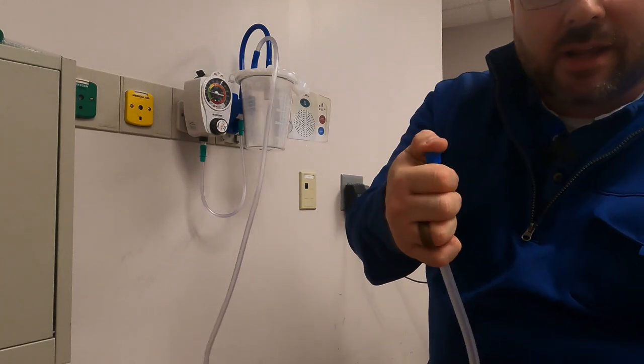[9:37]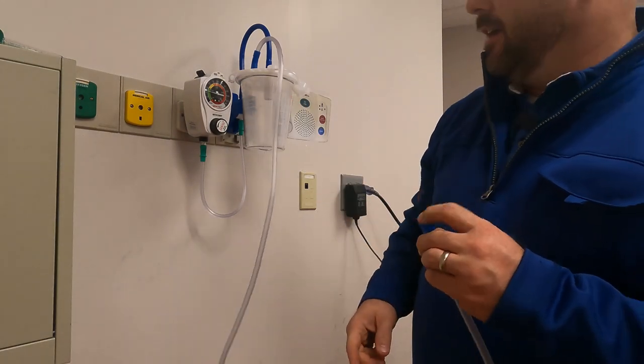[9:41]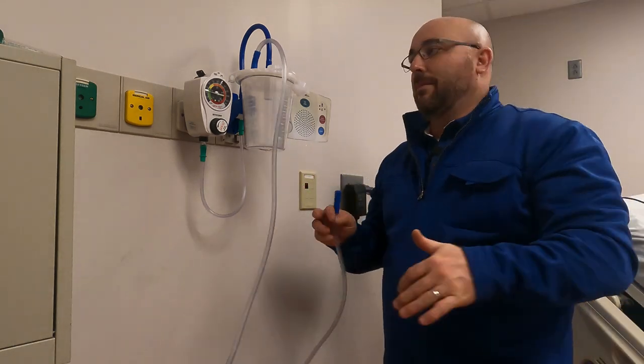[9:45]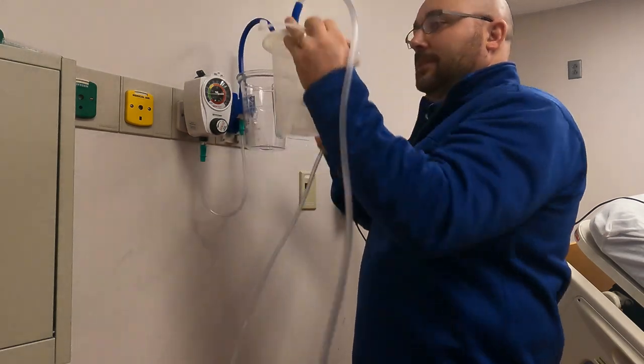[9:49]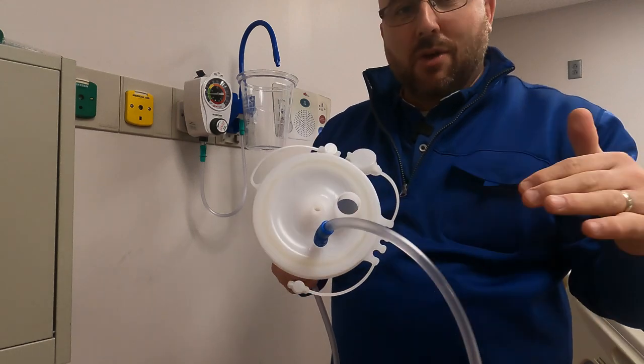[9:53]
And then I turn on my suction, and you can see right now the regulator's reading about 50. And I said, I'm going to occlude this to see what it is. And I occluded it, and as you notice, there's no change over here. There's a problem with the system. Well, this is very, very common because out of the package, this port right here is always open. You need to close it. You cannot use this until that is closed.
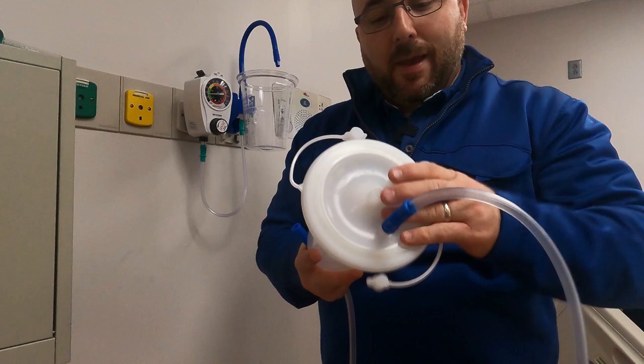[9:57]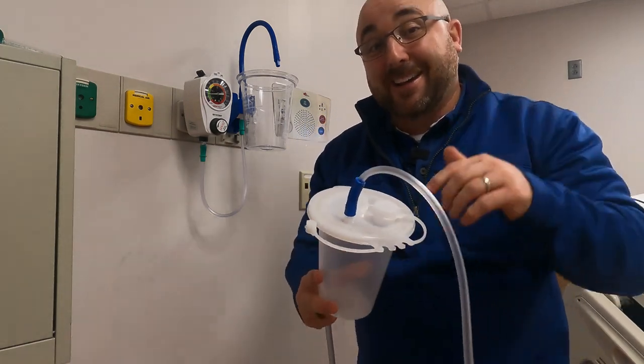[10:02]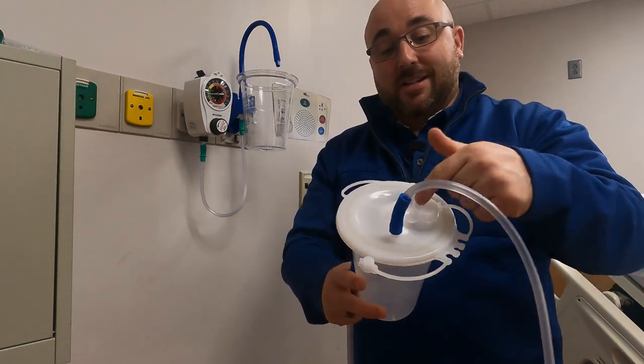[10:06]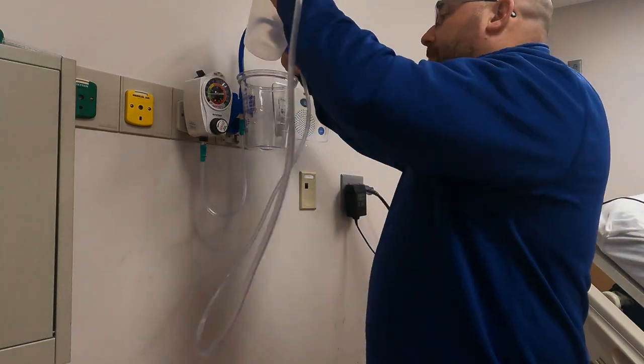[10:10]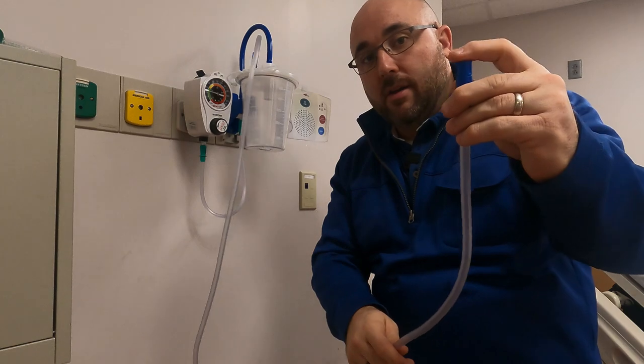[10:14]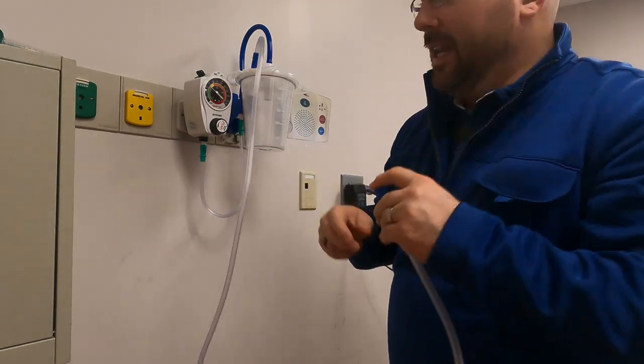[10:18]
So you take this large one, put it on there. You want to really look like you know what you're talking about, like when you pull a suction out, close that one off, because if not, you're going to suck air through here and it's not going to suck through the tube like you want. So, goes down, in, that's occluded, and now you can see my pressure go up. Now I was only on 80.
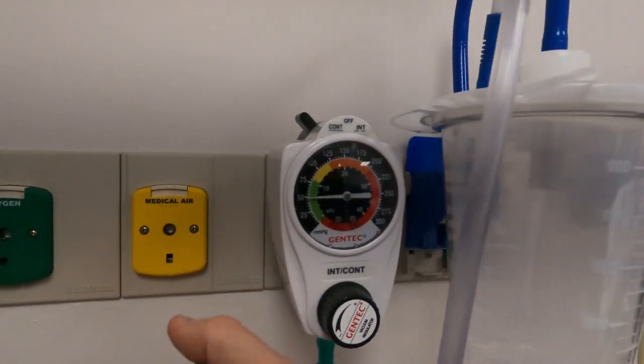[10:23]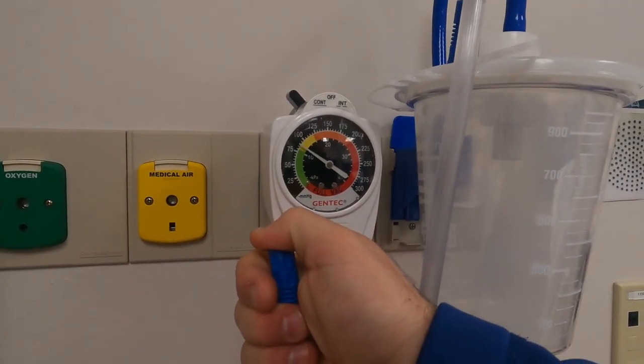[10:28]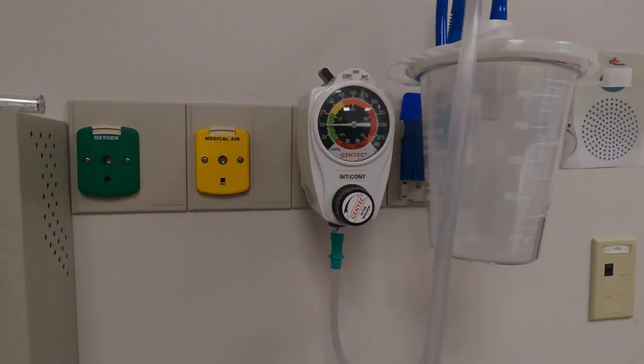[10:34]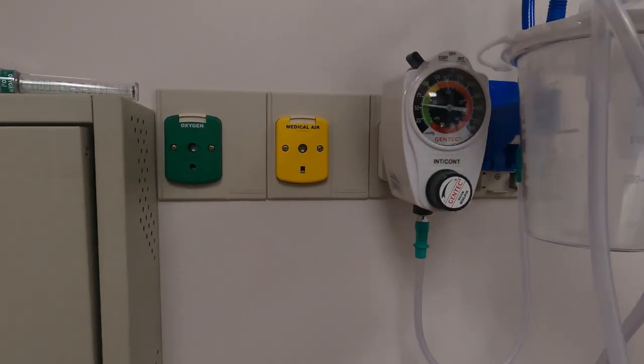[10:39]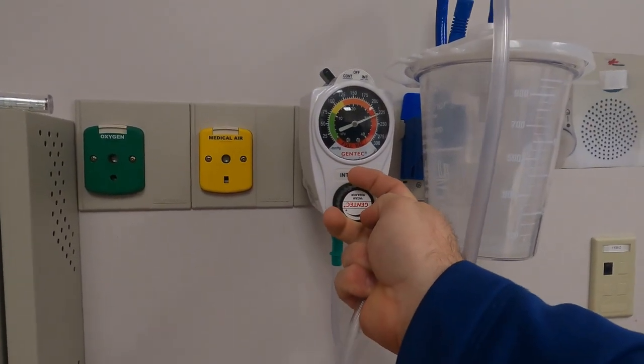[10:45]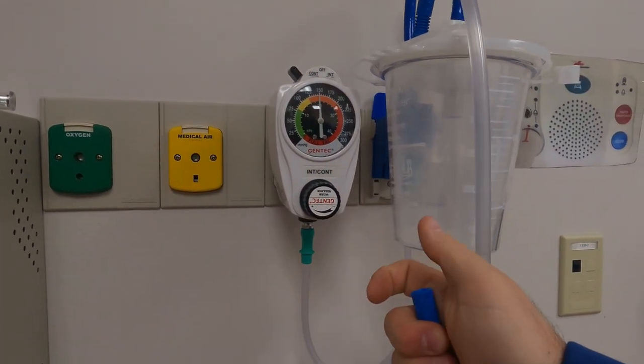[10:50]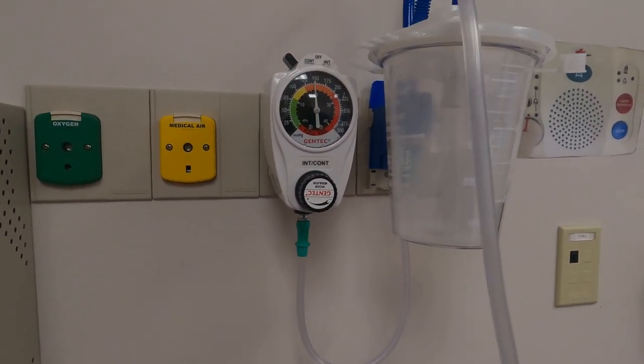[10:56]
Another way that you can test it, and so like we tested before, where we occluded this area right here, but we can occlude right here, and we can see our pressure. So, let's say the last patient that was hooked up to this regulator was on low intermittent suction. Now I need continuous, and they'll say, turn the suction up. Then you occlude, increase, until you get something right there. Now, that's what I'm talking about. Now, that's a lot of pressure. Now, you wouldn't want to put this on something that's an NG or anything like that, but if you're in a code or some kind of situation like that, then that is an appropriate amount of suction.
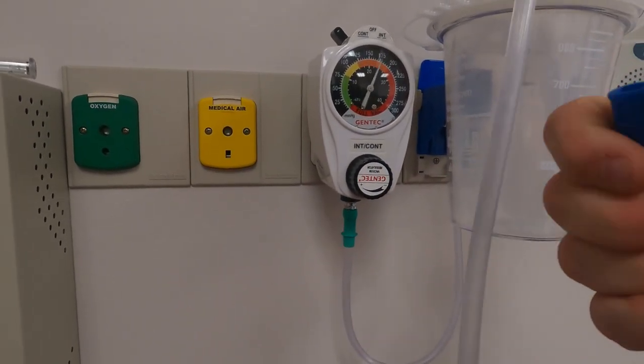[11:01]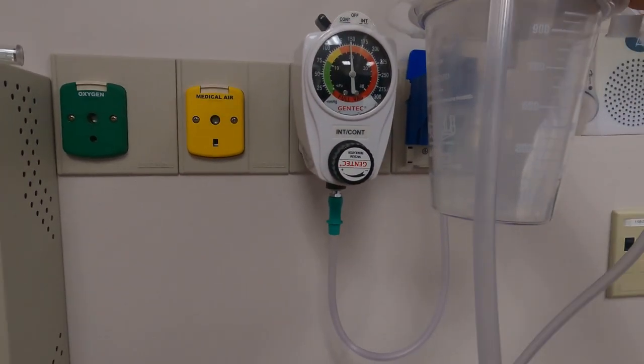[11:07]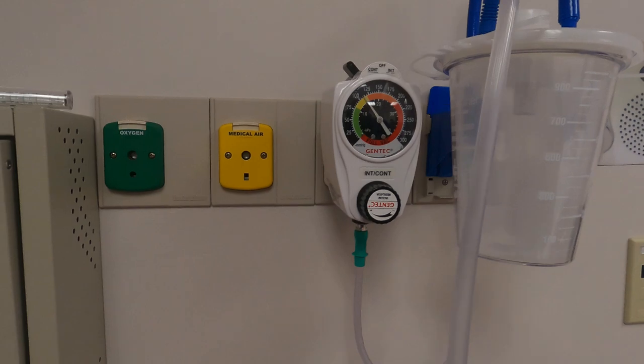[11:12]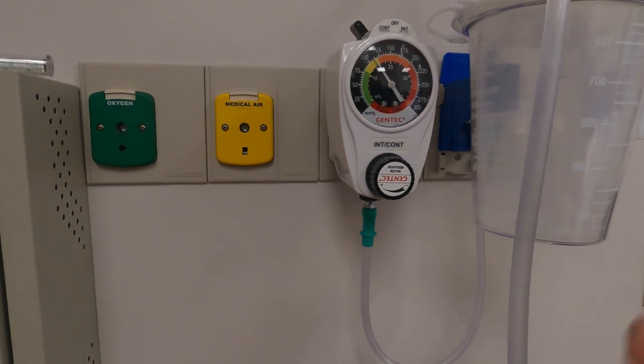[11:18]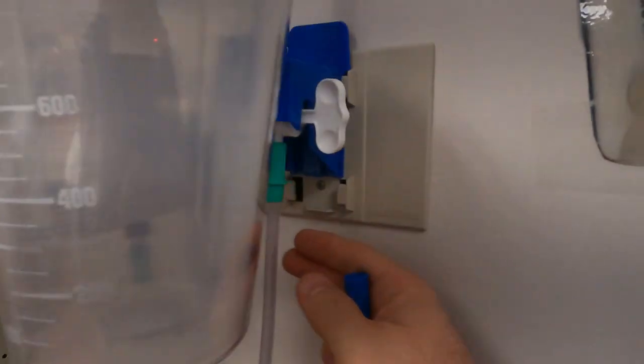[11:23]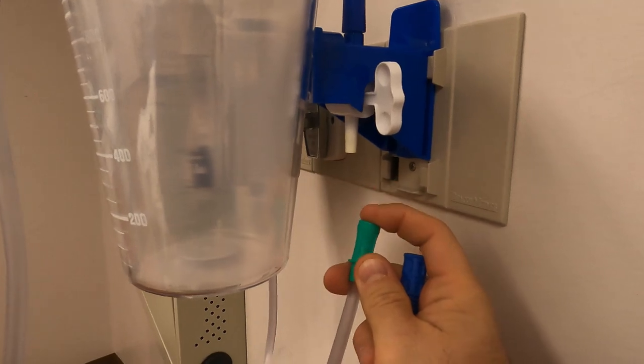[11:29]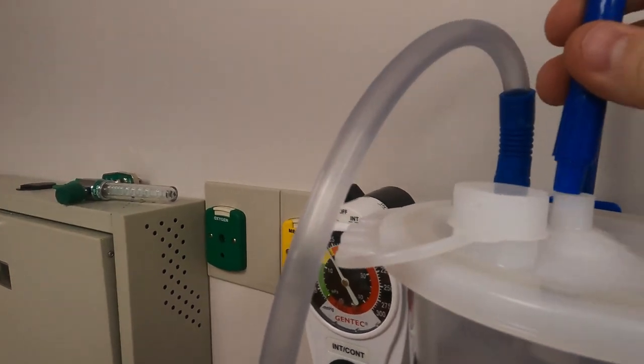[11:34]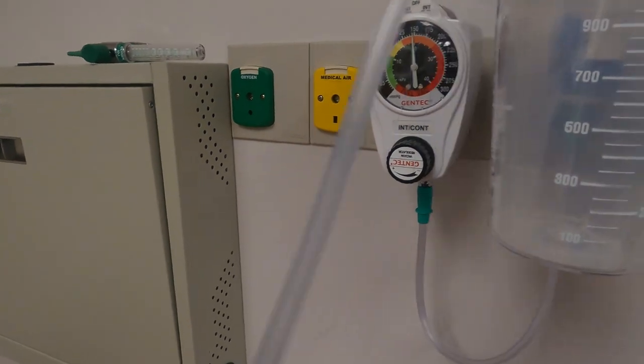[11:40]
If you go and you want to test this, because it looks like there's pressure on there, let's say, let's take something off. So let's unhook that. Suction sounds like it's on, and I would go to do this. See no change at all? I've got a problem in the system, so I start from the very beginning. Not there. Not there, there's good. I'll go up here. Oh, that's not connected. There we go. So, and then it comes back down to here. You gotta follow it and trace it all the way back.
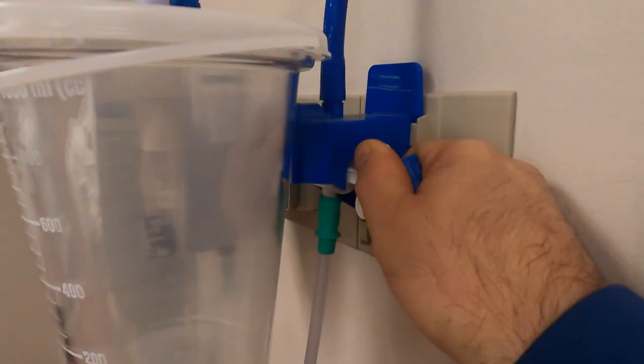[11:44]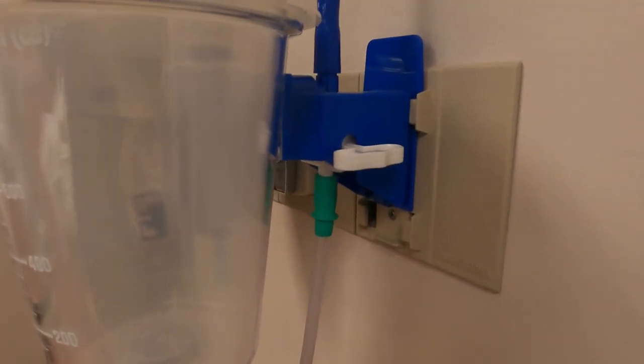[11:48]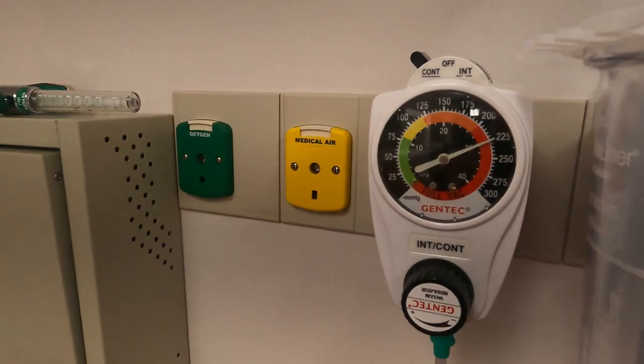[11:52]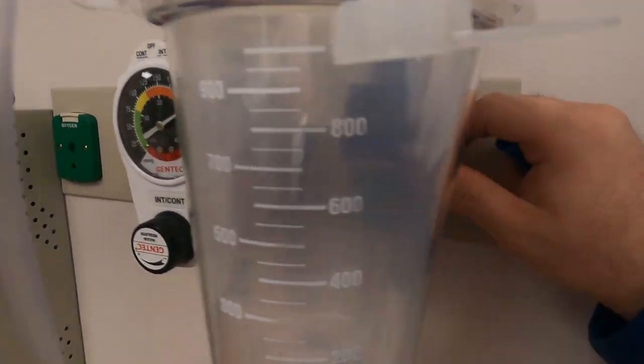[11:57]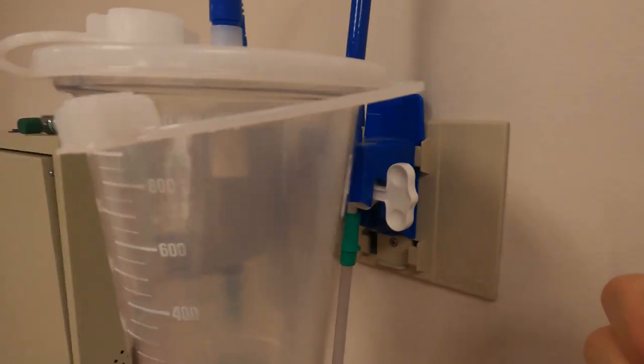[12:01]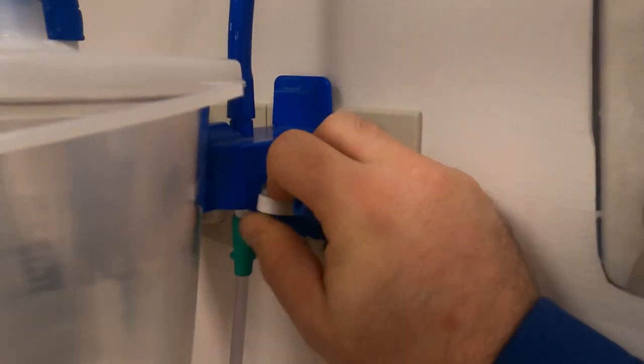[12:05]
Now there's a really interesting little piece back here, which I don't know if I'm a fan of these or not, but it is a little key and it turns it off. Look, nothing like that. I'm occluding, I got nothing. It's just holding that pressure there. And then if I open that up, there we go. Now we're running again. So this little key on the side is another thing to look out for.
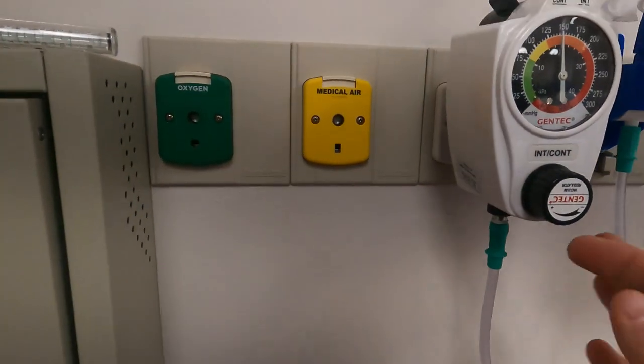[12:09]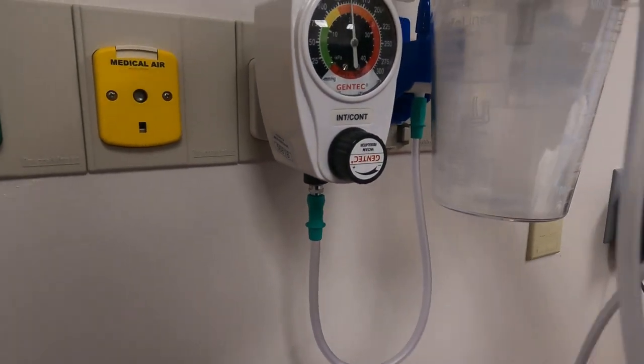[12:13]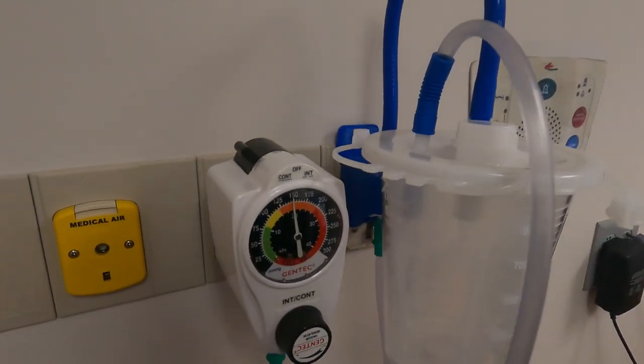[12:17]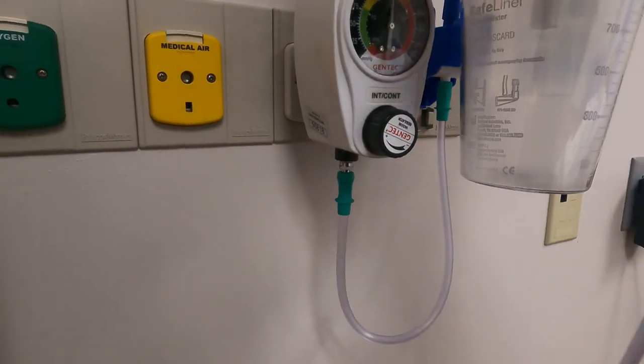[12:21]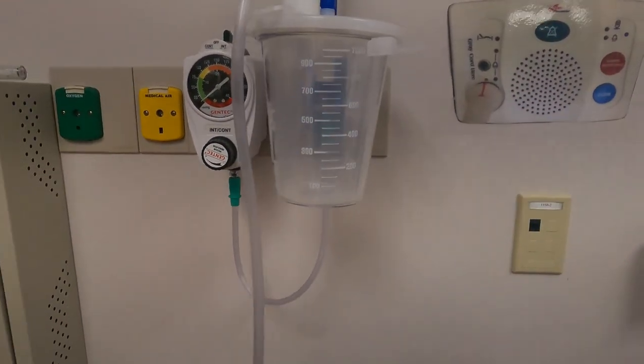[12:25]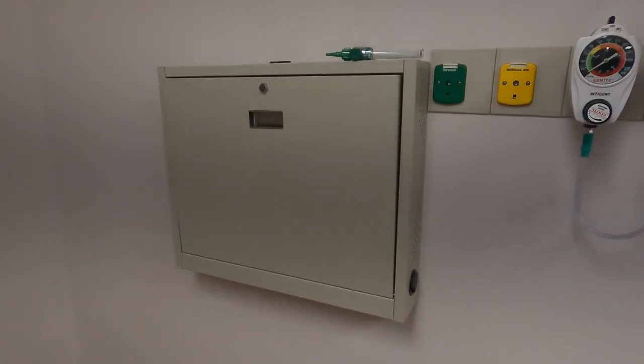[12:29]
But if you're not getting suction, you always want to first start at your regulator and then work your way all the way to the patient. Usually your problem is going to be somewhere in the lid. I'm just going to tell you that right now. So that's how you're going to do it. Increase your suction and then turn it off when you're done, because it's really annoying when it sits there and runs. That is how you run suction with a regulator.
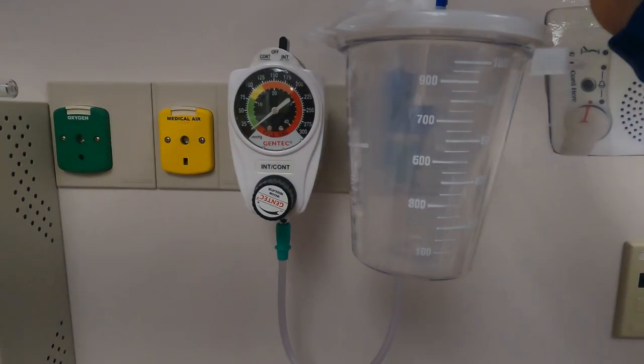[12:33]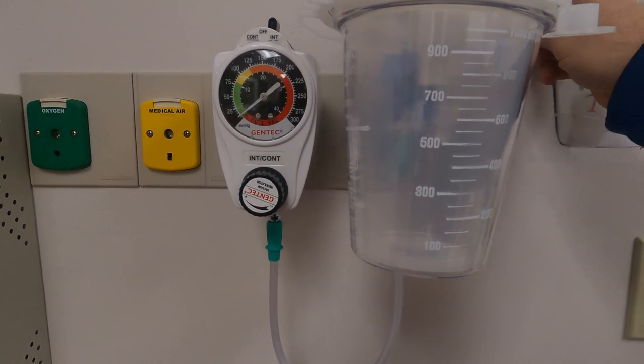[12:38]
Now, a couple different things you want to look at. Now, if we're going to go dispose of this, so let's say, obviously I have gloved hands on, but we'd pull this off.
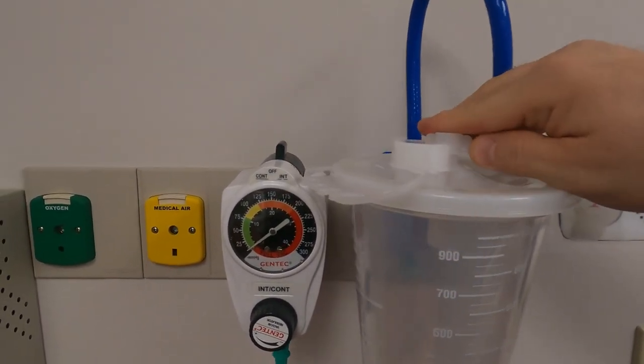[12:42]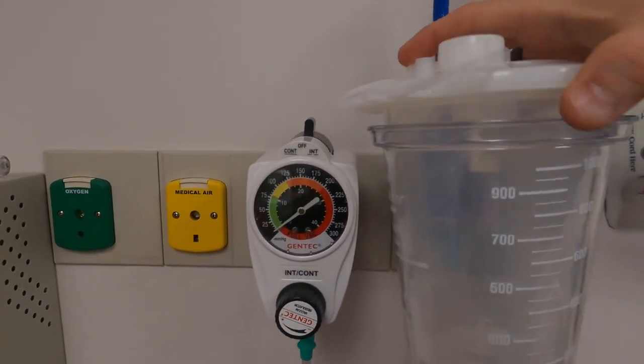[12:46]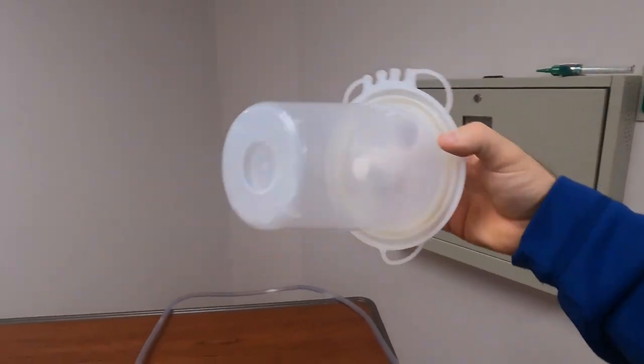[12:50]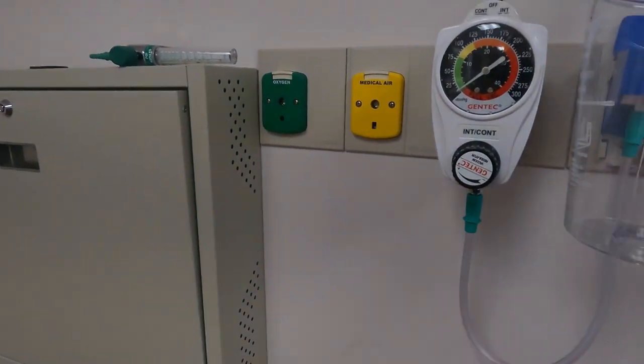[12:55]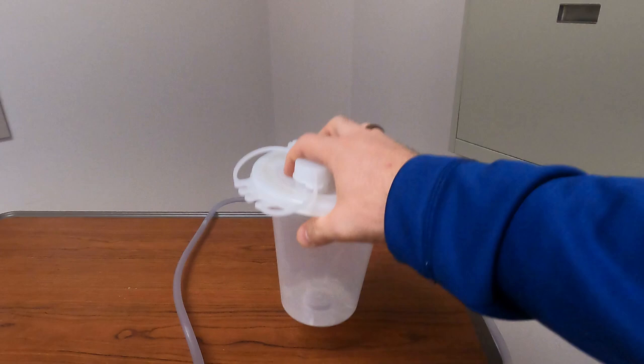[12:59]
I would take this little guy here, occlude this, take this little guy here, occlude that. This piece comes out, that is 100% sealed up, and that gets put in a red bag of some type. So then, you can wipe down the rest of this, and then you're gonna get another one, a clean one, from storage and put it into here.
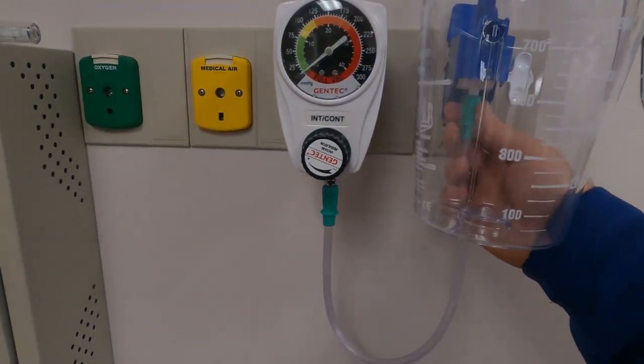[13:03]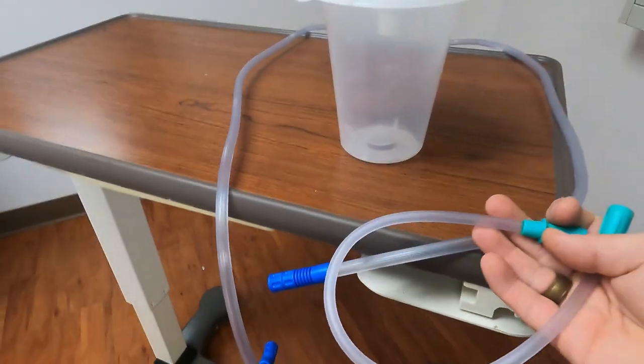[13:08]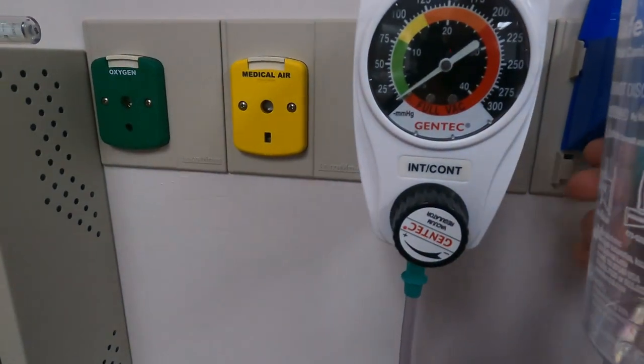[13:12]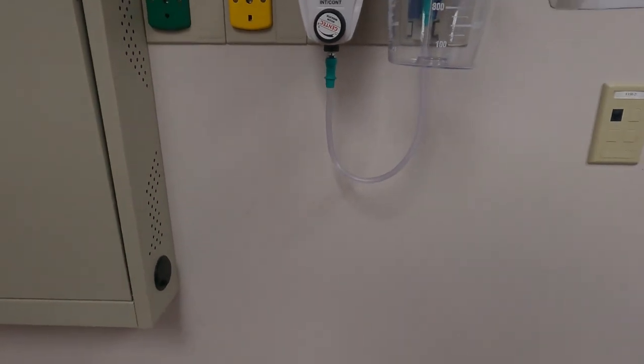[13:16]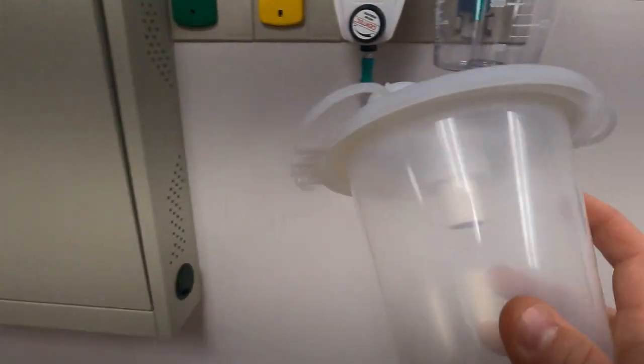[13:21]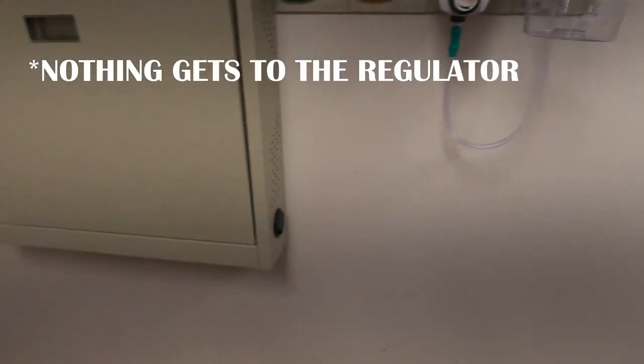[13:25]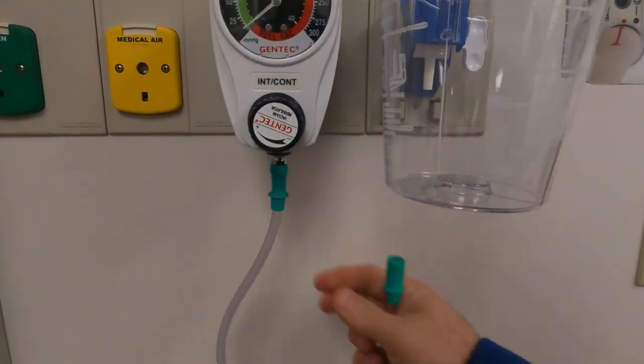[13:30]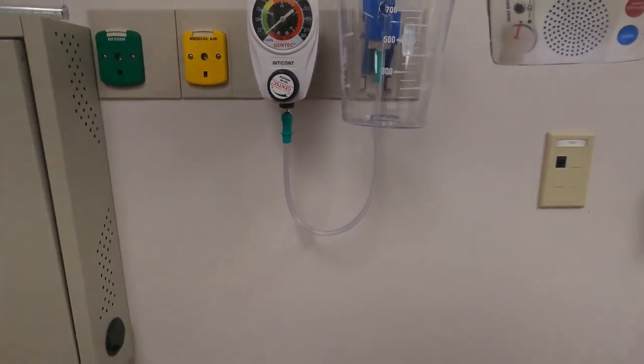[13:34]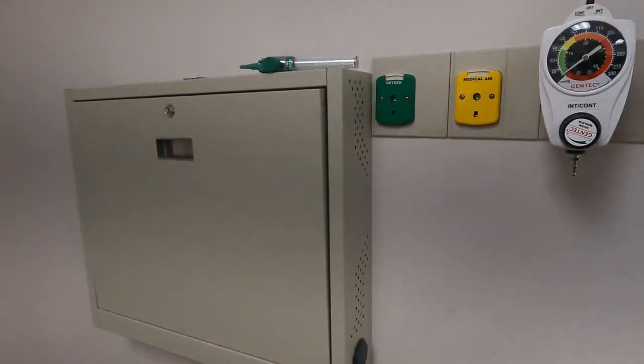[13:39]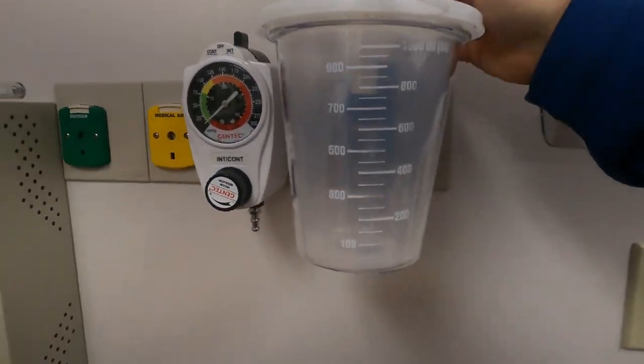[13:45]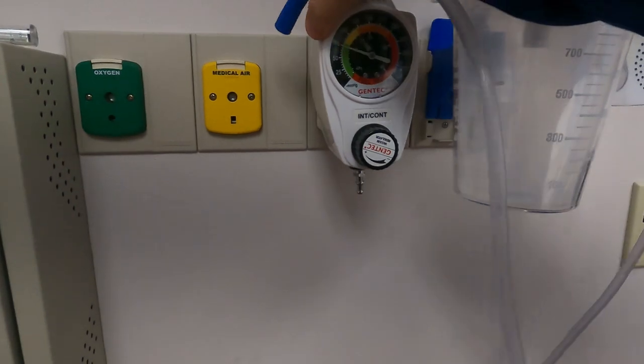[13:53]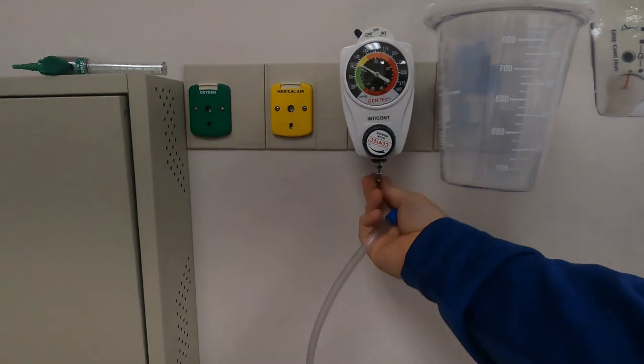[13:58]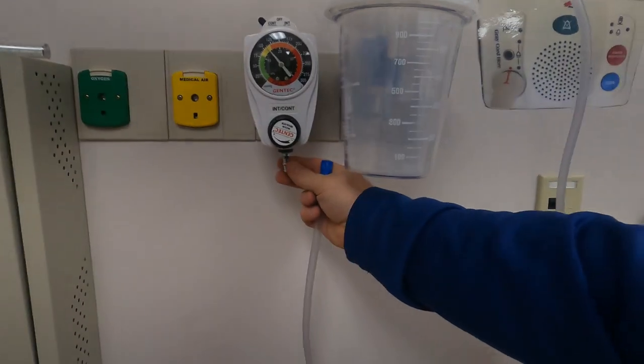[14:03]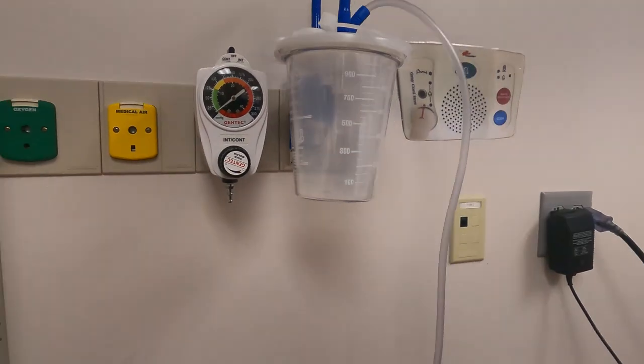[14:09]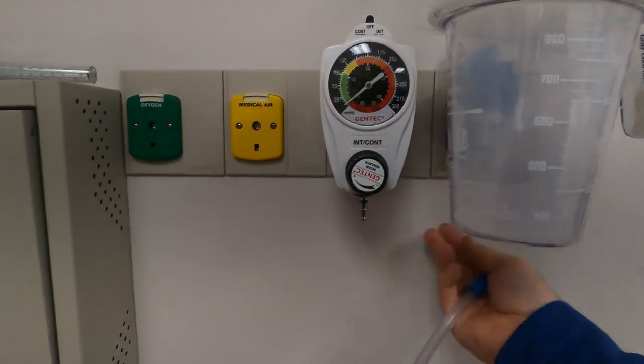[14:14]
So, what we're gonna do is make sure this stays on at all times, because if you are in a pinch and you got everything set up appropriately here, you're like, man, I watched Jimmy's video, I remember everything that he told me to do, we have all this stuff going, we're all good to go, and you go to do this, you've got nothing. And unless you're walking around with a piece of rubber tubing in your pocket, this is gonna be a hard piece of tubing to find to fit between here and here. So that's a really key part, and it's a good part of setting your room up, is looking and making sure that tubing is there.
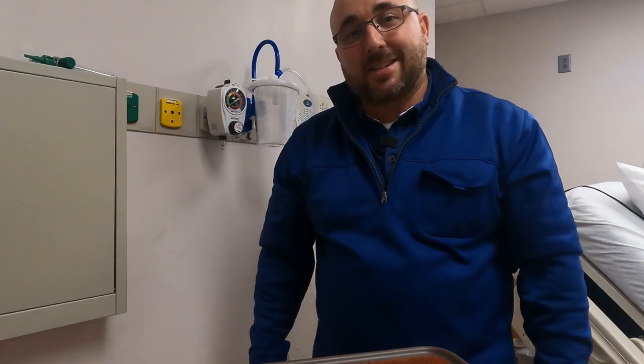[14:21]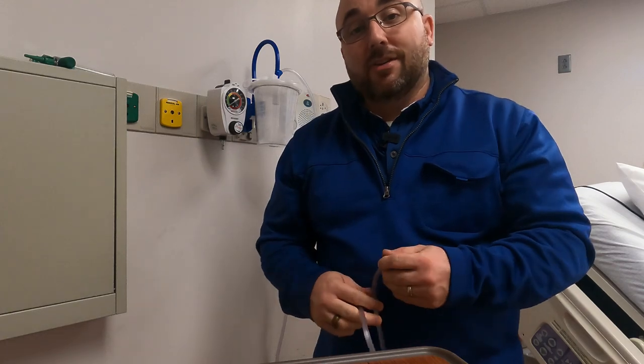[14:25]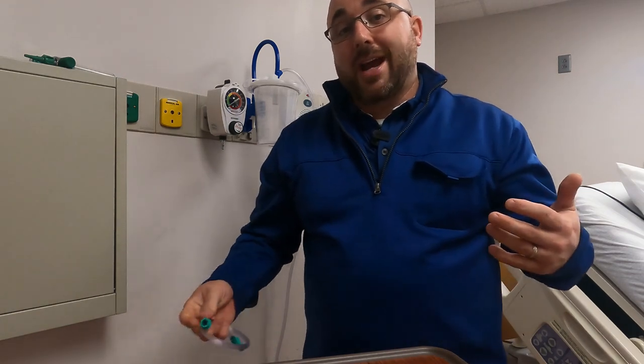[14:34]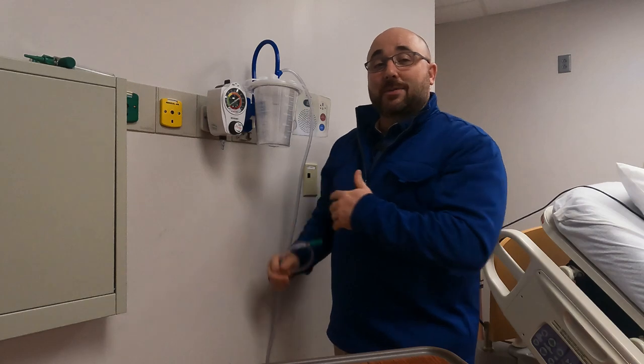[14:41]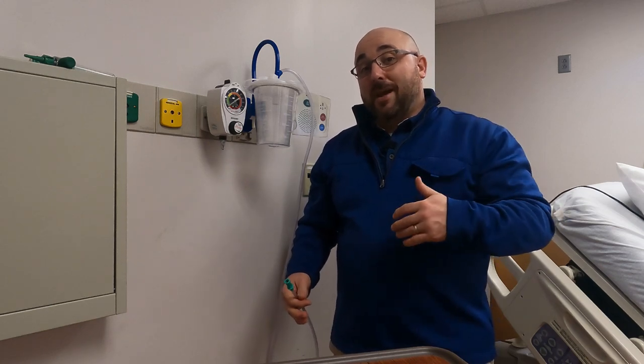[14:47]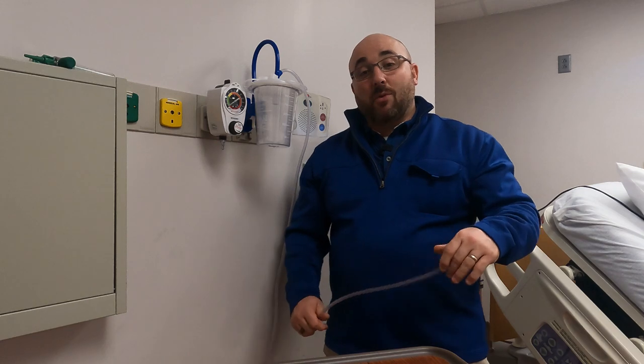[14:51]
So comment below too if you've ever had a situation where you've came into a room and this was an absolute hot mess, because it's actually happened to all of us before. And you know, that's what makes us. We run into those errors. That's what makes us better, because we know next time we walk by our ICU rooms before they get patients in them, we make sure these are set up right. Or if we have to run in a code to grab a setup, we know exactly what to hook up.
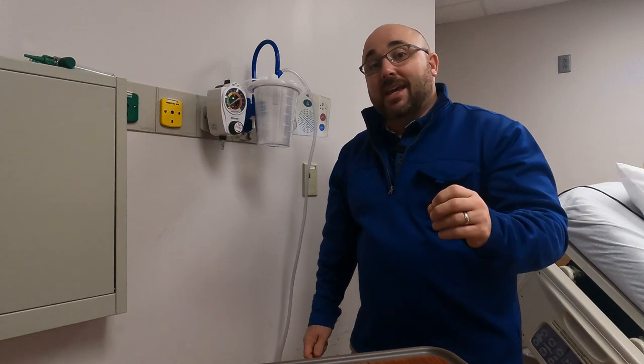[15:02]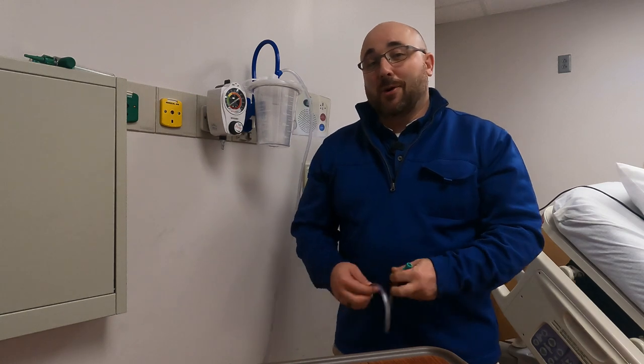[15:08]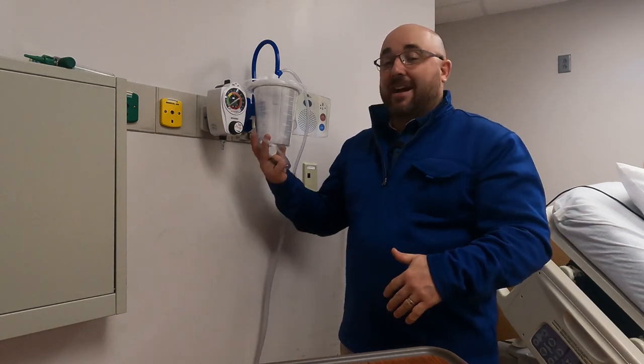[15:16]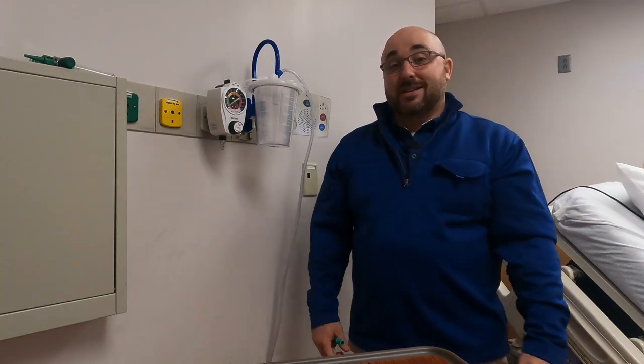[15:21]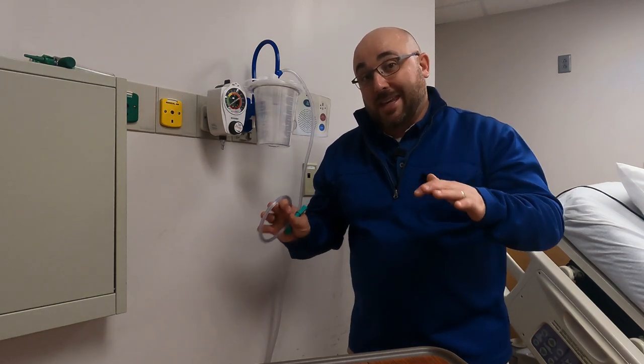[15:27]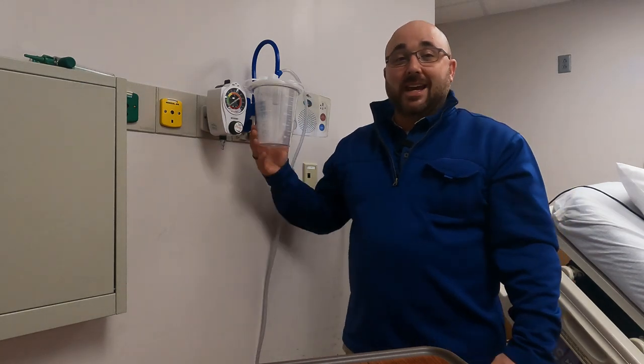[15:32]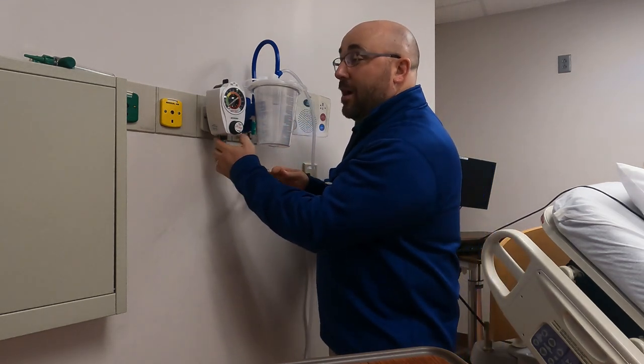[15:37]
So if you've never been in that situation before, practice it before you're in the middle of a code or an emergent situation. Because when a patient vomits, they need their airway cleaned, is something that needs to be done right now. So it's great to have this hooked up, and you'd be invaluable as a new employee. If you are in a code and somebody says, we need suction, usually they'll say that and not direct it at anybody, because nobody wants to go get it because it's funky to set up. If you learn how to set up, you could be a great asset to the emergency team, ICU team, ER team, or whoever it be, in helping our patients when they need suction quickly.
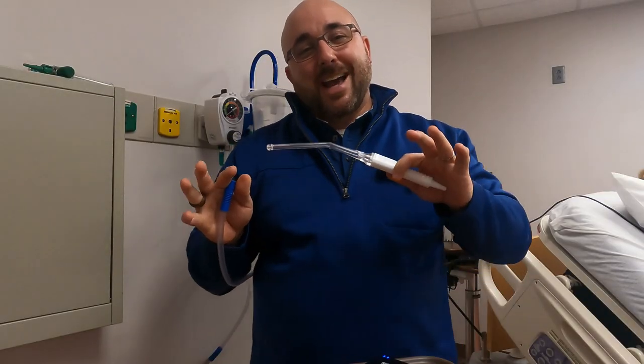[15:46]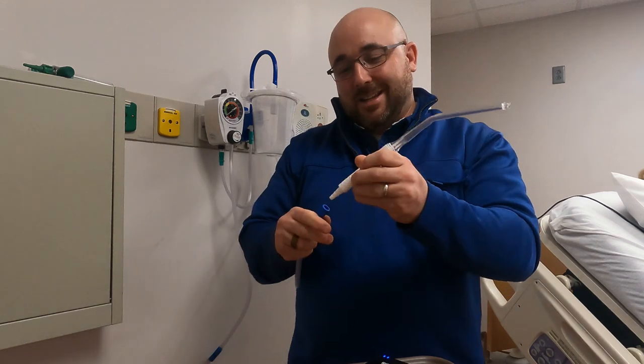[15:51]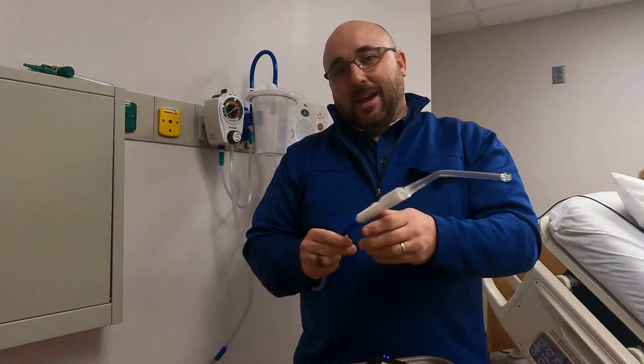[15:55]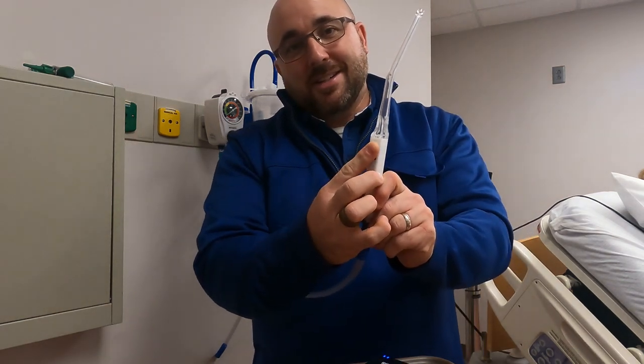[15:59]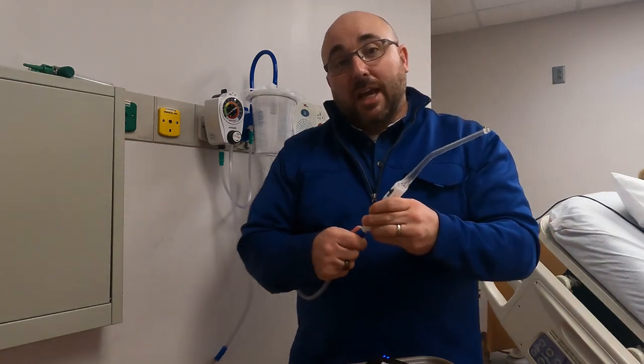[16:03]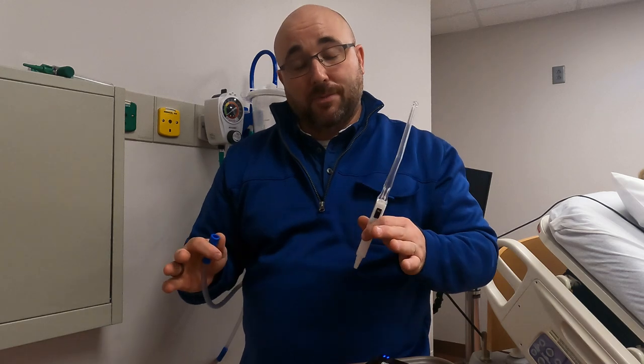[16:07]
Well, what's up? I got some bonus footage. I kind of forgot about that little device that attaches to the end of the hose for suction. This is really important. This is rigid. It's got an on-off switch on it, as you can see here. So what is it called? It's called a Yankauer. But people will call it multiple different things. I'm just telling you right now.
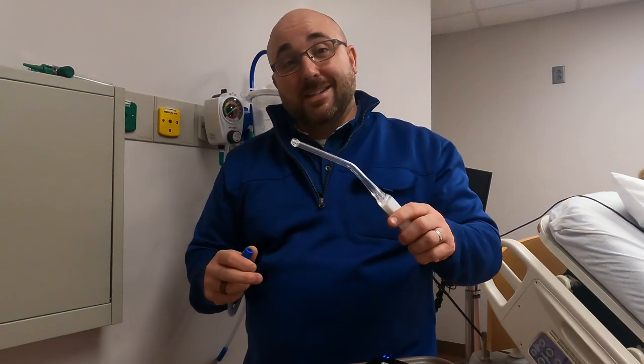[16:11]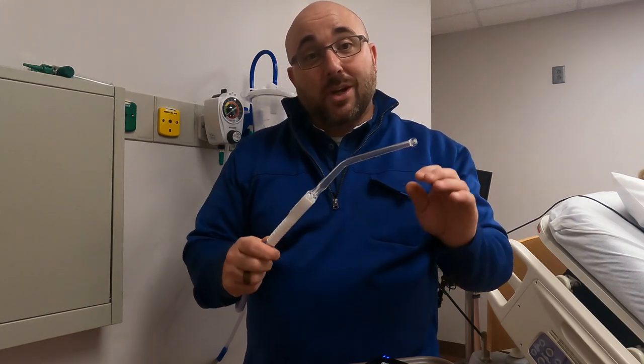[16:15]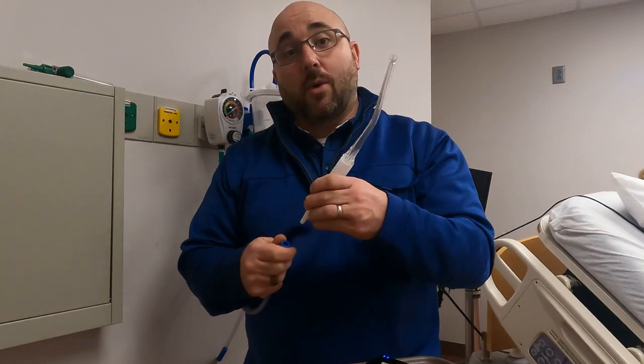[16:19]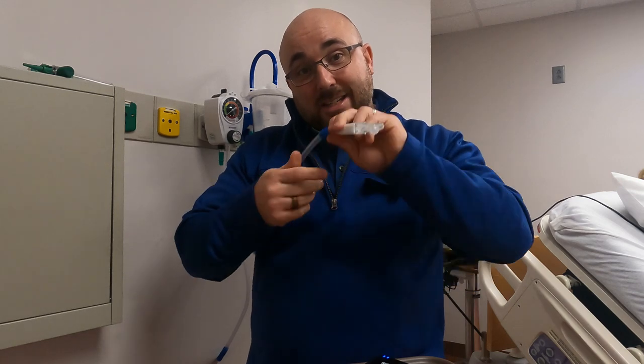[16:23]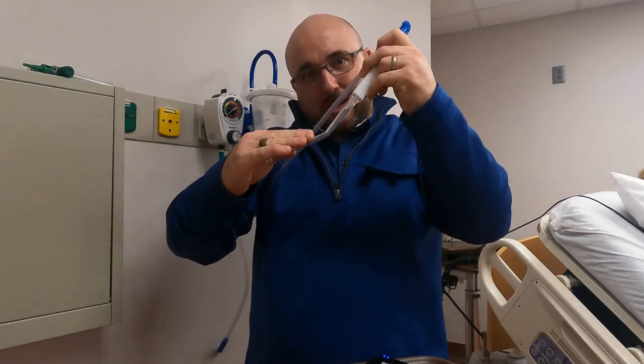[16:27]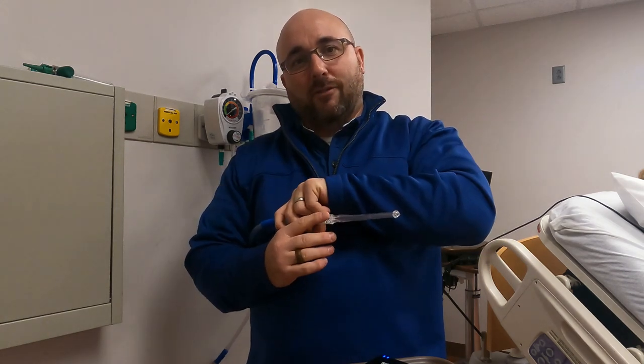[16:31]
Tonsil tip is the easy one. It's kind of Americanized. And if you're from the back hills, we call it a yonker. So they ask for the yonker. This is what they want. But this is used to actually direct that suction, usually upside down, around the tongue, down into the oropharynx, to clean that airway out down here before we go in for intubation.
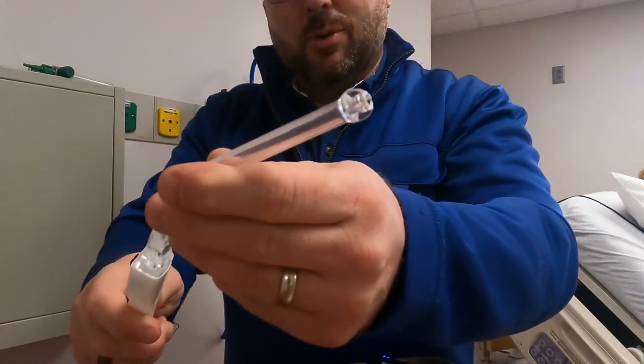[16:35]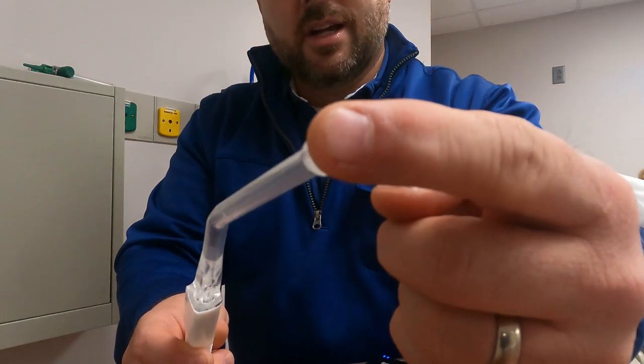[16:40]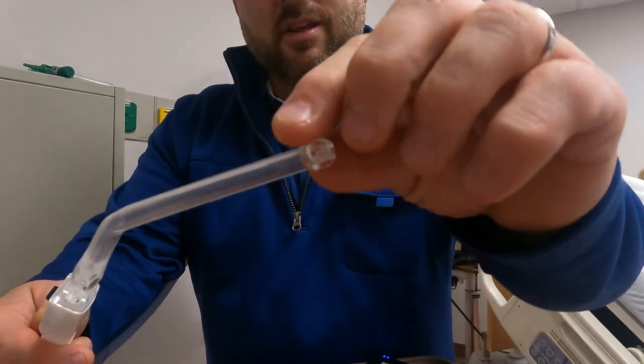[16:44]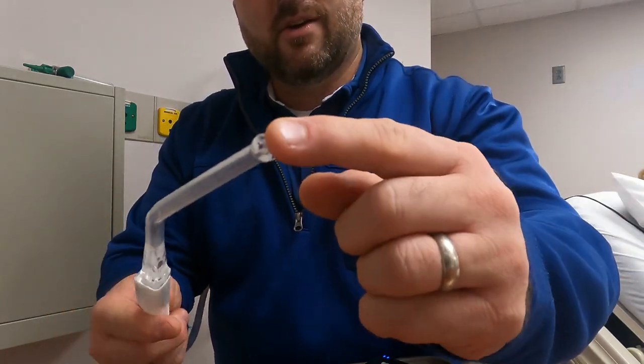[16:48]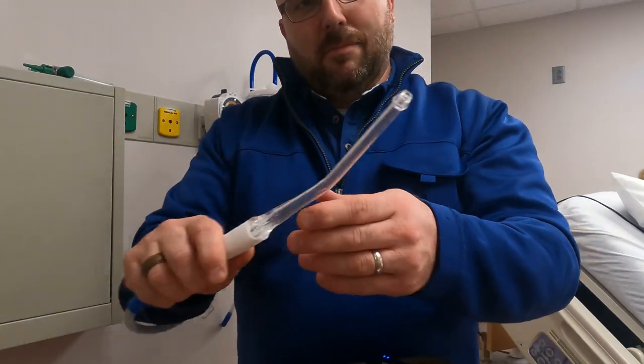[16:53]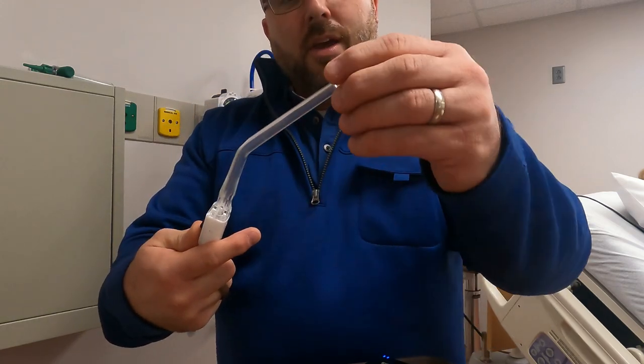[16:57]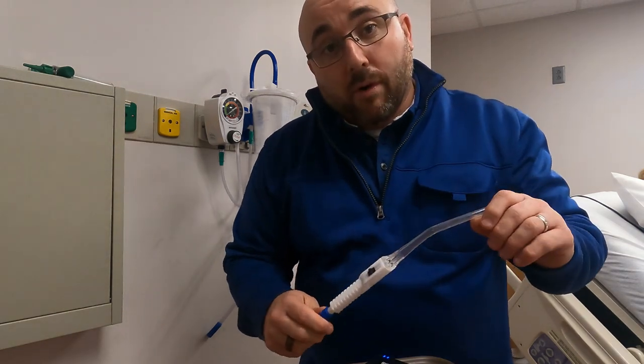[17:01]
Also, it's great. It's got a large tip on it. And you see some cool things about the tip. If it becomes occluded with chunks here, you've got holes on the side for it to suck it in. And if the sides become occluded with chunks, then you can pull it in the end. So it's got multiple ways to mitigate the chunk issue if you're suctioning vomit or mucus. So you'll notice those tips like that. But tonsil tip, Yankauer, or your good old-fashioned yonker.